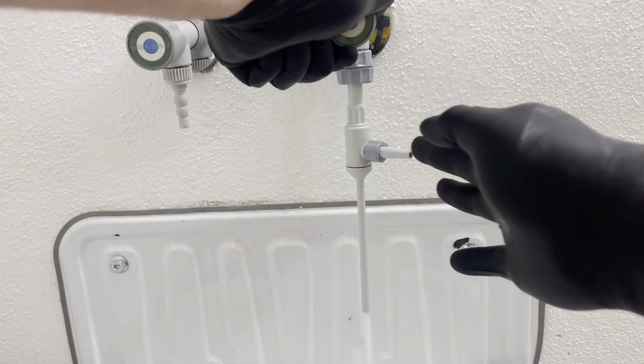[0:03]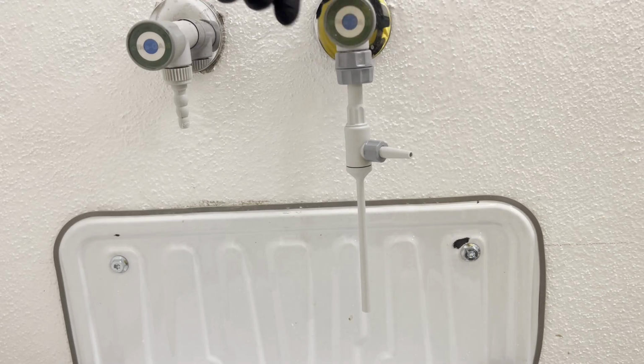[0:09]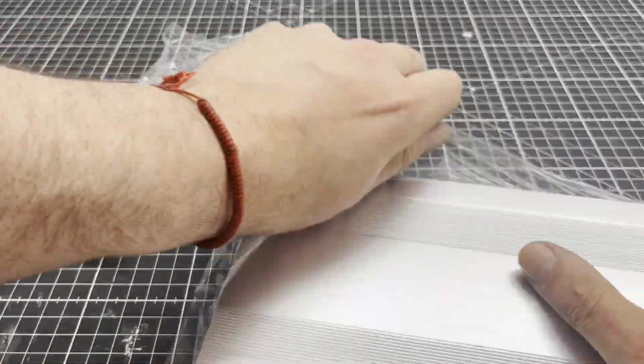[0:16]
While I was using a vacuum ejector during my last project, I thought that an electrical pump with an adjustable flow rate would be very practical in the lab. When I have an idea, I usually have a picture in my mind straight away. This time was no different.
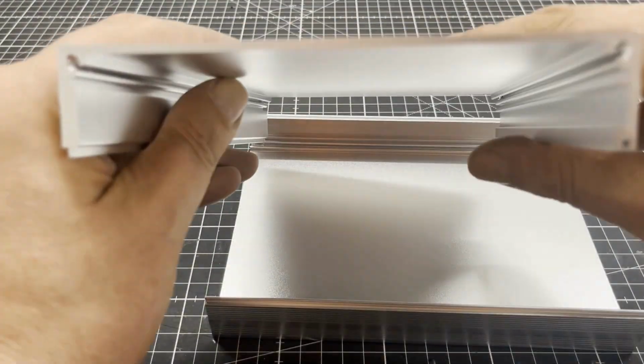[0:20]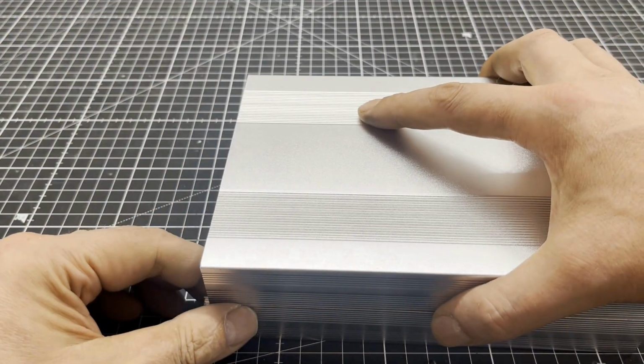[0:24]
Everything was supposed to be housed in the stylish aluminium box. The box is based on a tongue and groove system.
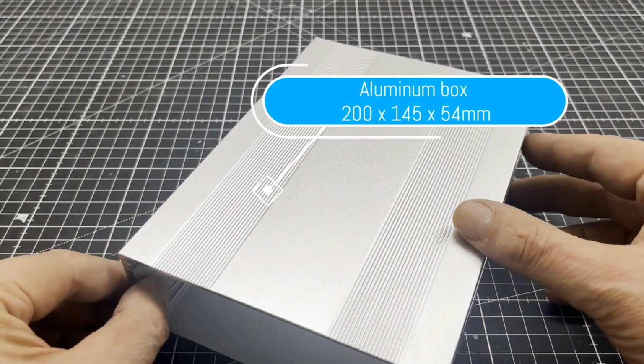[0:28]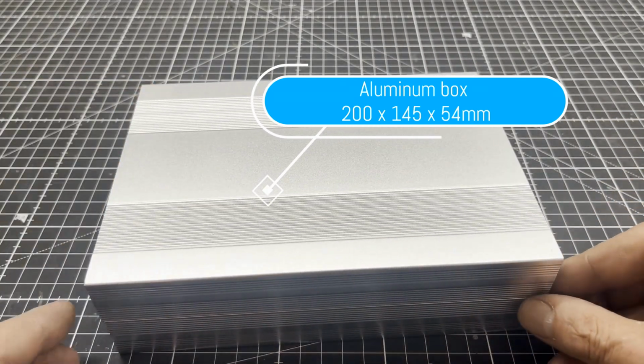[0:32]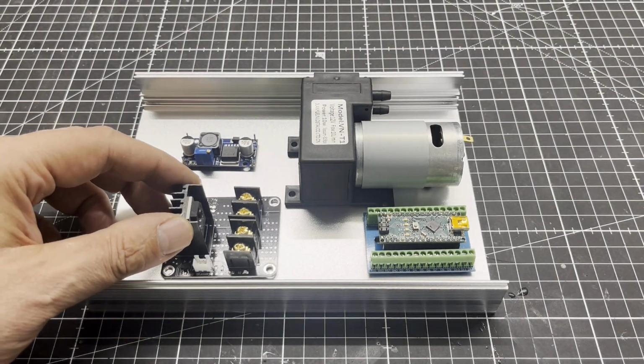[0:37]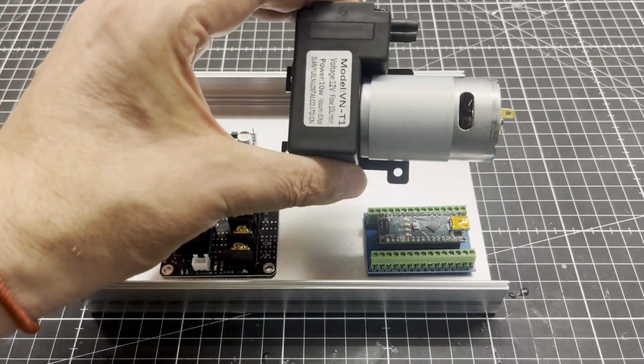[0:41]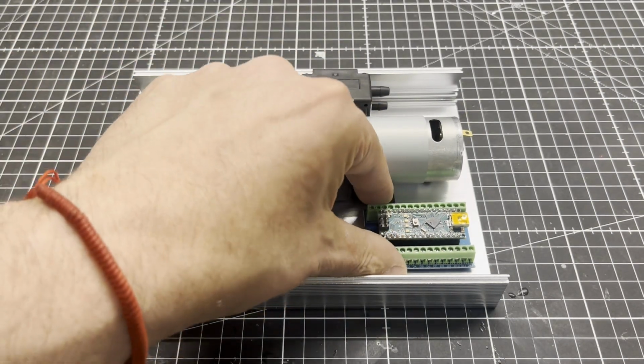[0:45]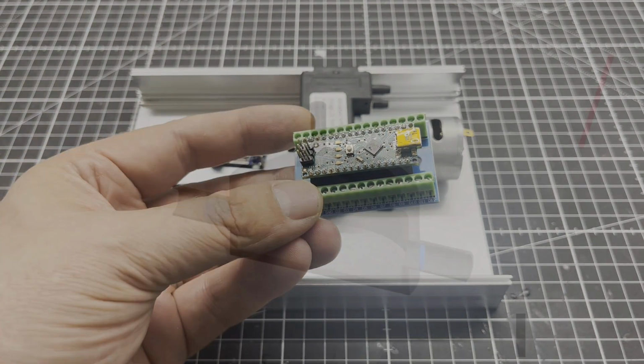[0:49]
First, I roughly laid out the components. The pump is a so-called diaphragm air pump with a flow rate up to 10 liters per minute. The microcontroller that controls the whole thing is an Arduino Nano that sits on a screw shield.
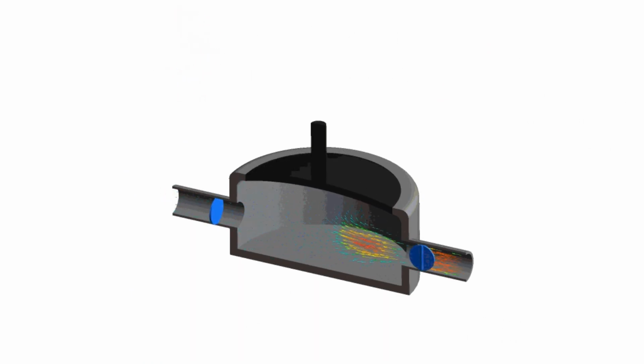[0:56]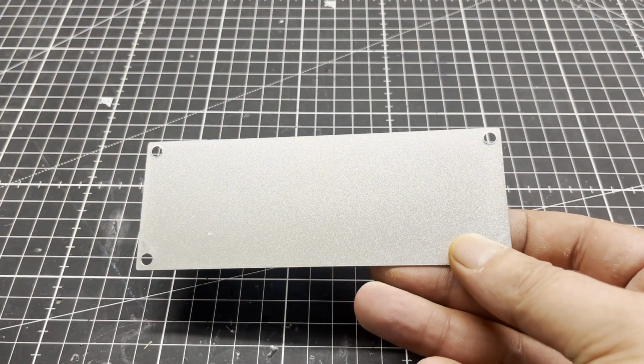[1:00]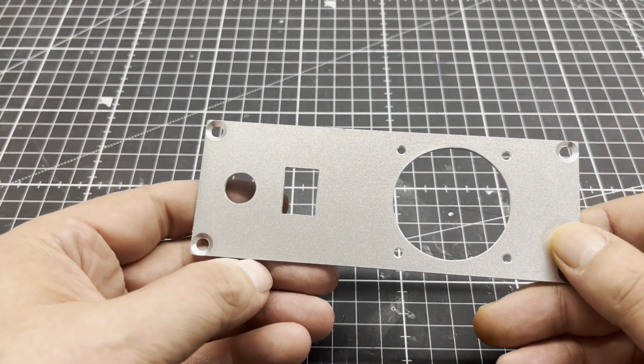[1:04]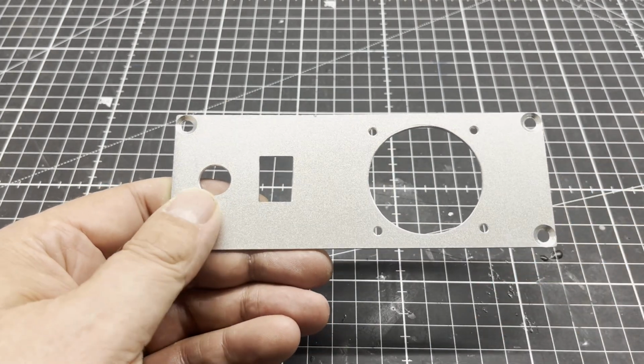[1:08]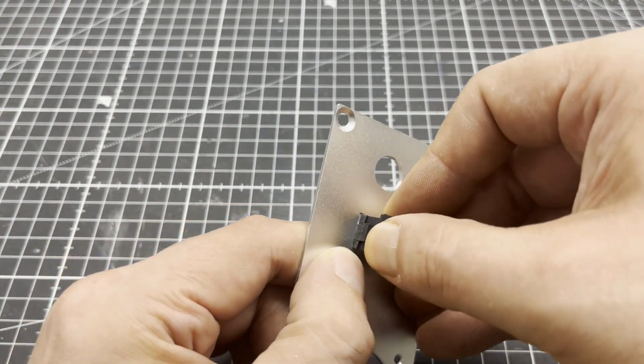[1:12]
A tip if you have to make cutouts. Mark them out either with layout ink and a scribing needle or with a paper template that you glue on with spray adhesive. Always saw out smaller than the cutout needs to be, then do the rest with a file. It is best to use a fretsaw with a metal blade for cutting.
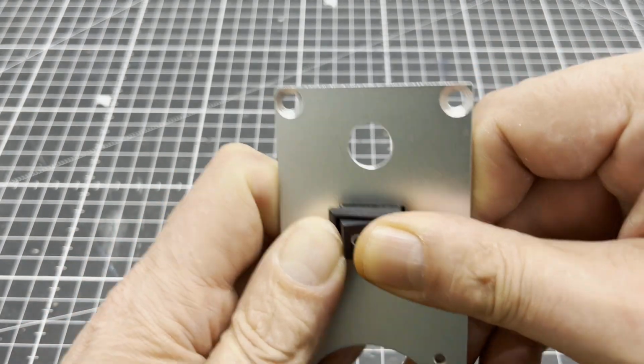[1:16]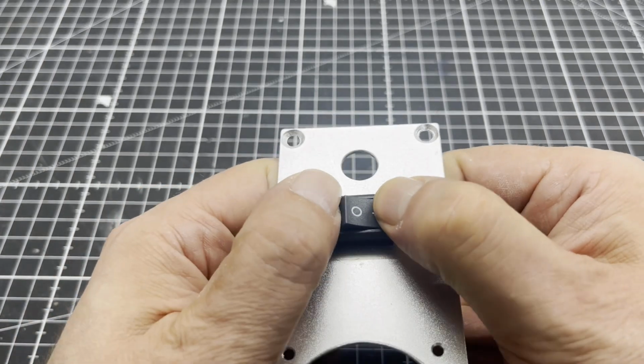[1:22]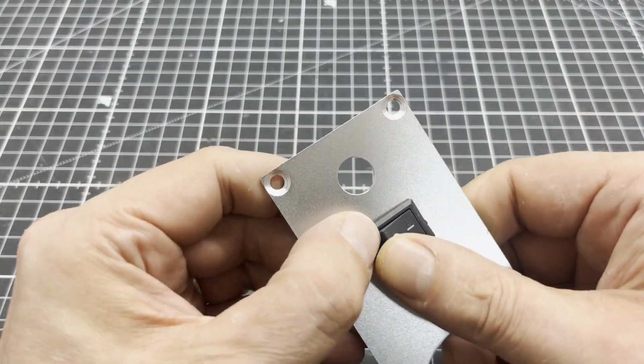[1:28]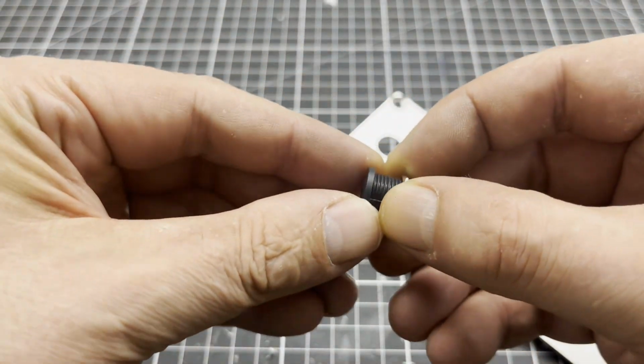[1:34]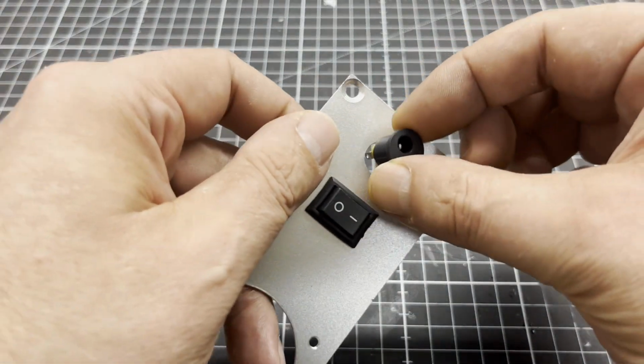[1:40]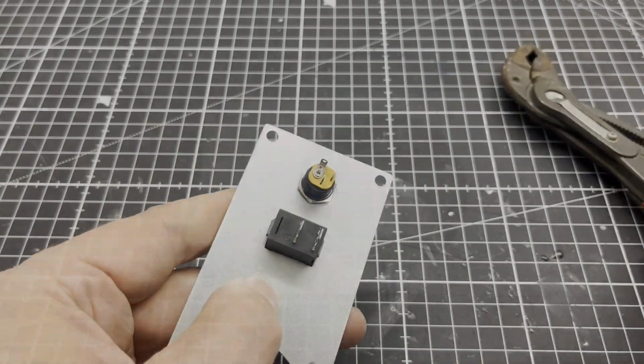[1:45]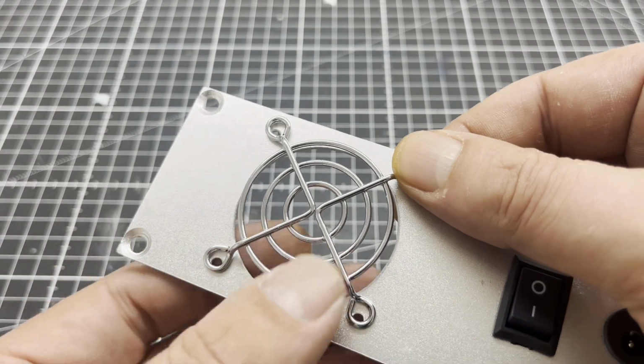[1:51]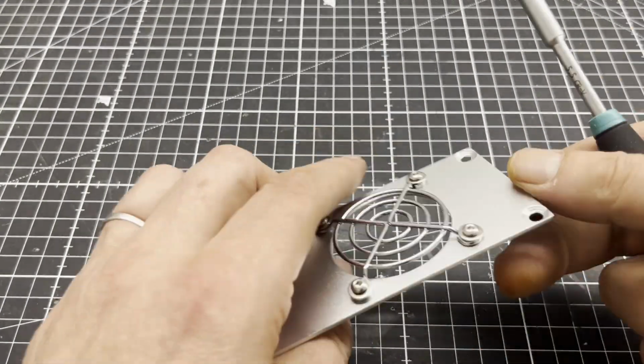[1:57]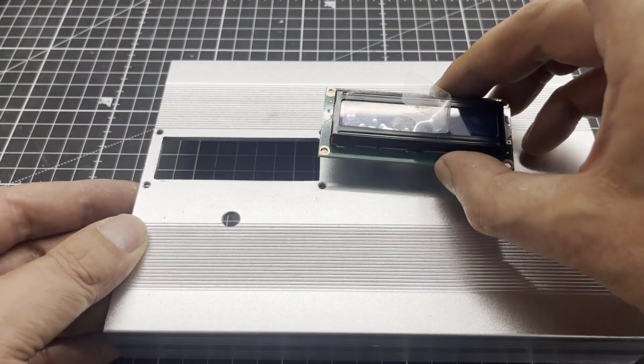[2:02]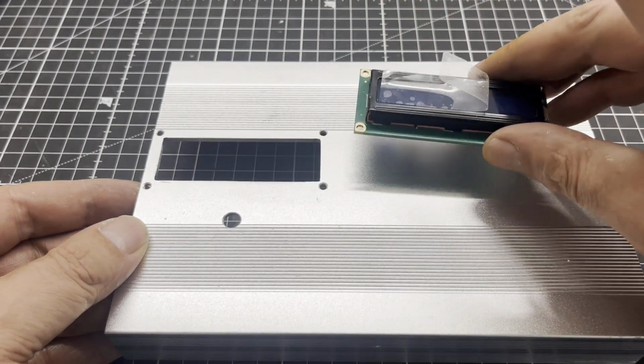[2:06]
The cutouts you see here are for an LCD and a rotary encoder with push-button function as a human-machine interface.
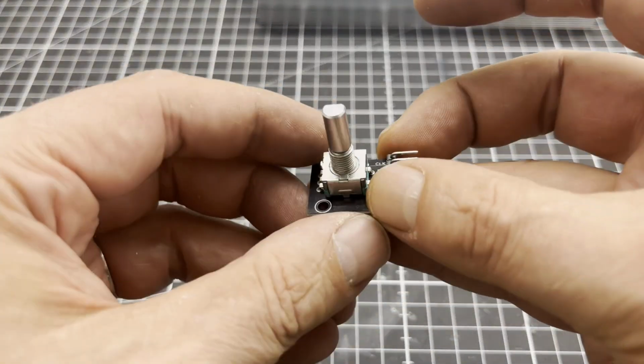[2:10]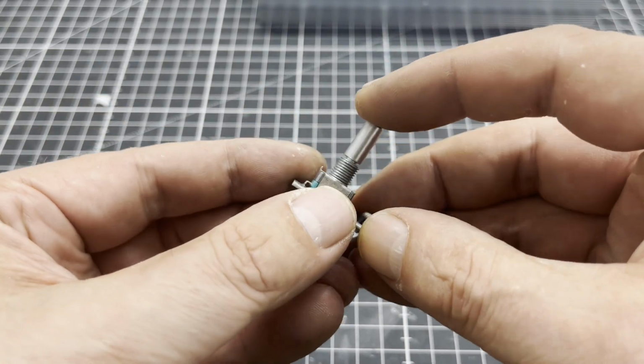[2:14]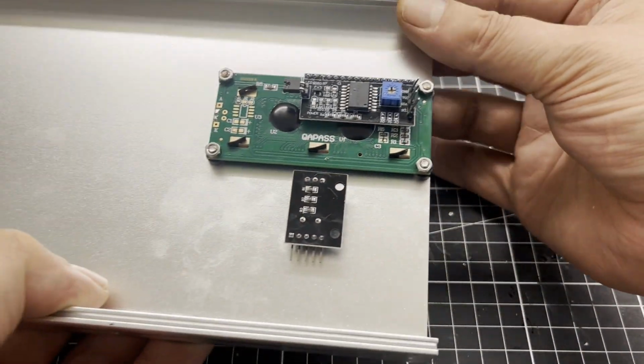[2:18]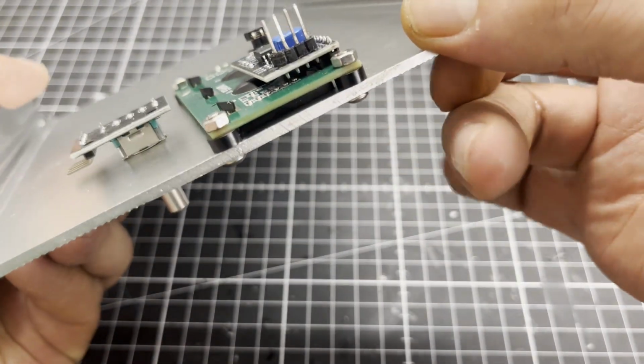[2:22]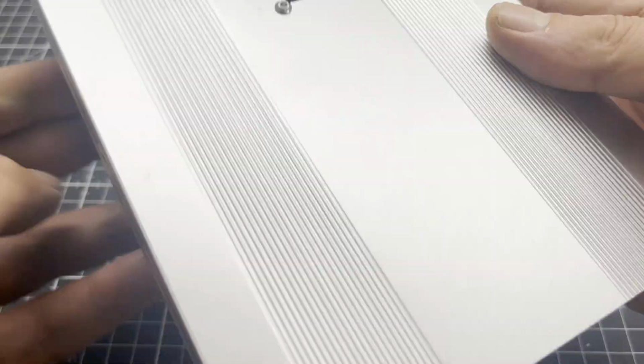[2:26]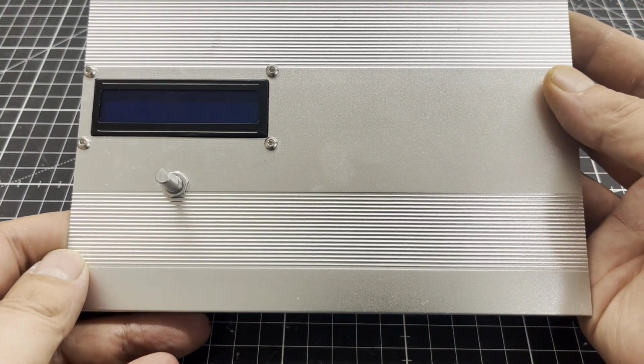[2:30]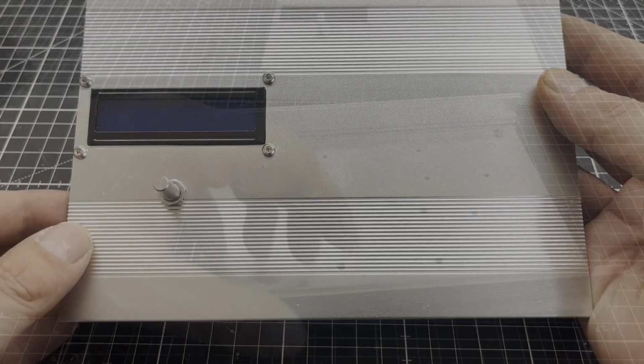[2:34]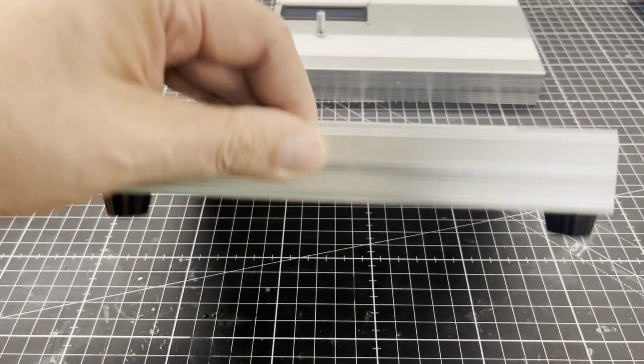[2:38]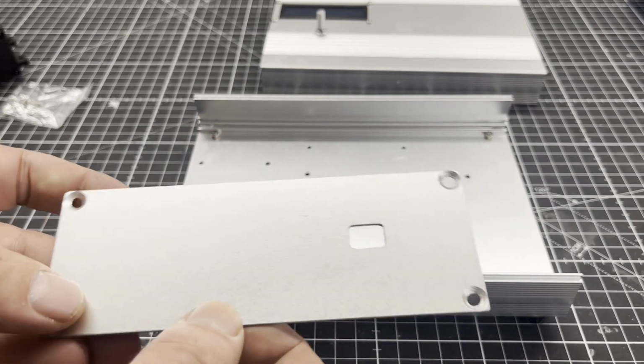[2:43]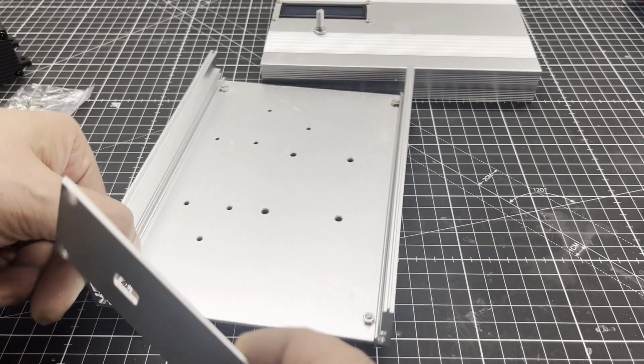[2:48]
Next, I drilled the mounting holes for the components and mounted the rubber feet. I added another cutout to the second side panel. It is for the USB connection of the microcontroller.
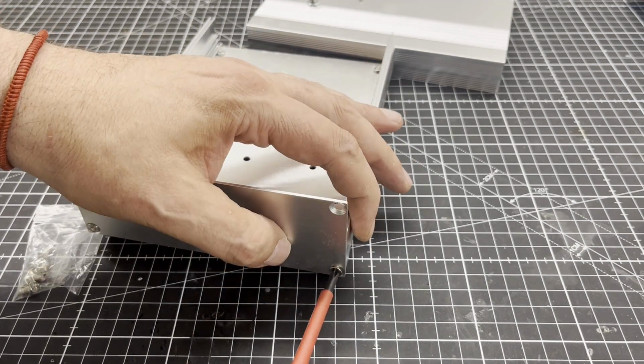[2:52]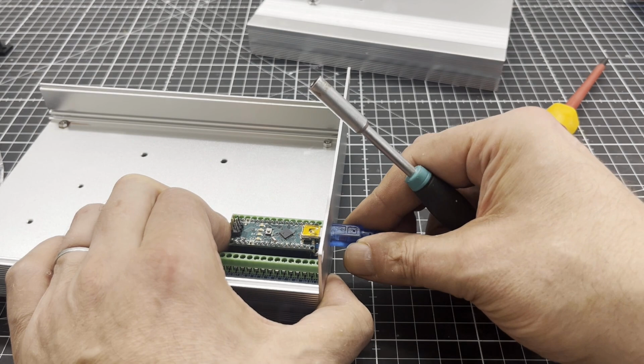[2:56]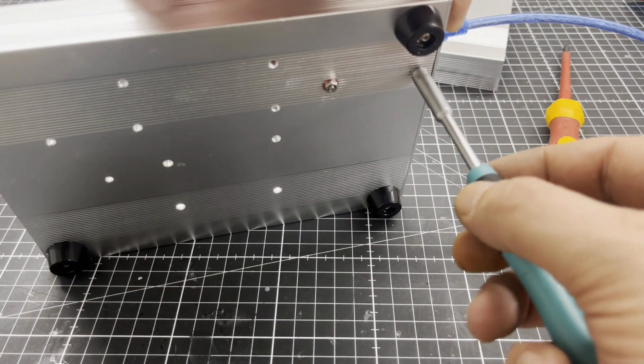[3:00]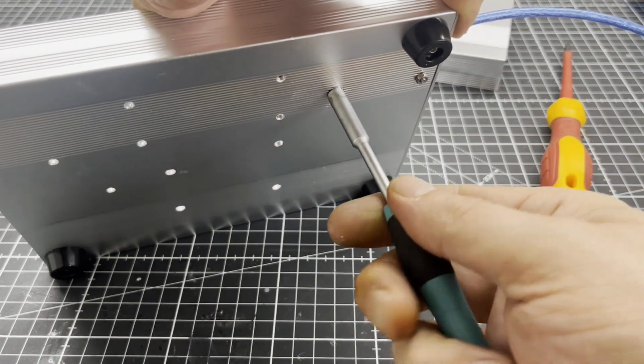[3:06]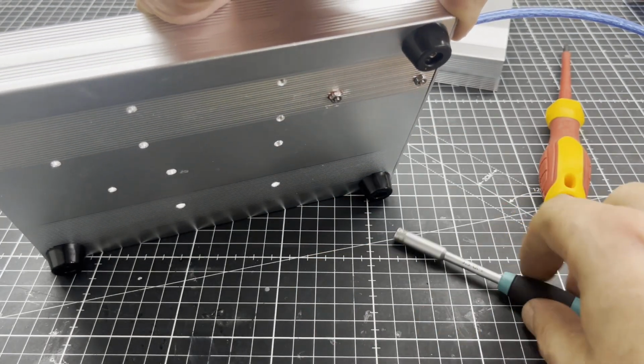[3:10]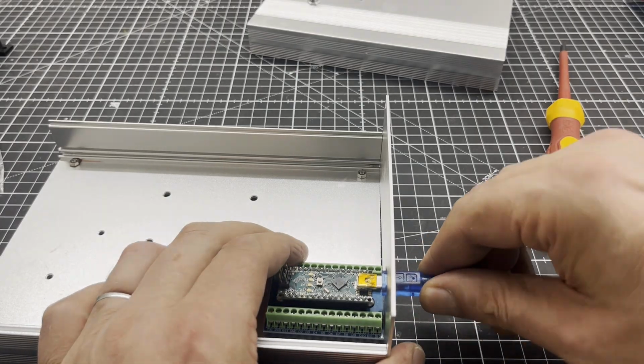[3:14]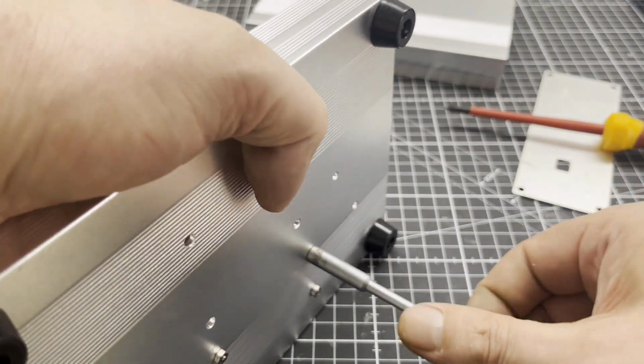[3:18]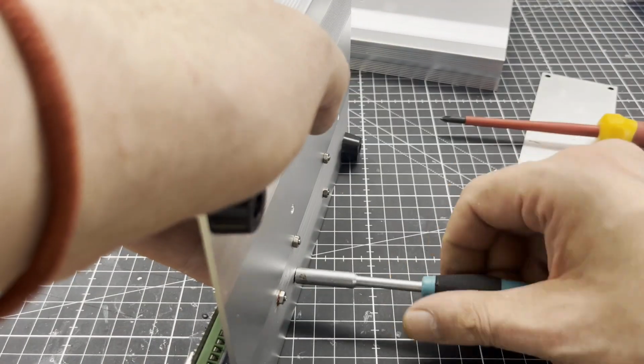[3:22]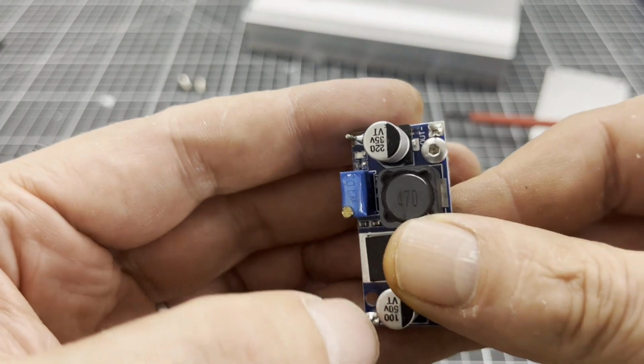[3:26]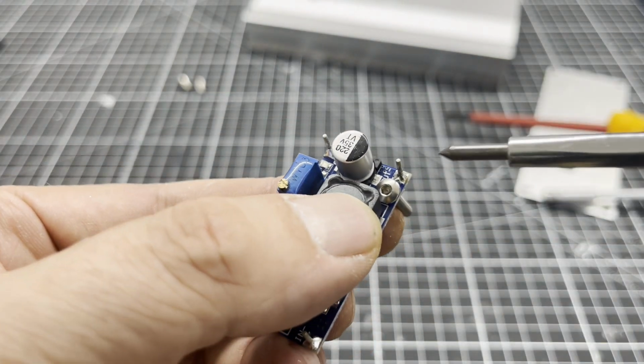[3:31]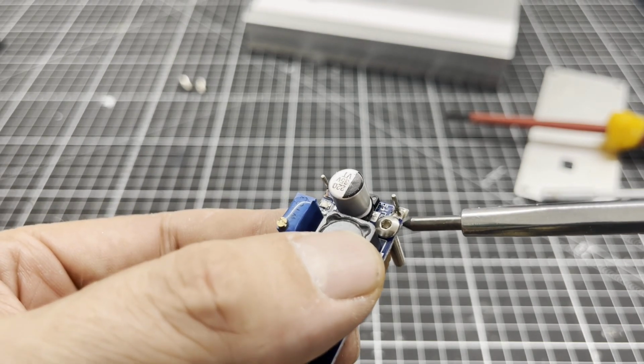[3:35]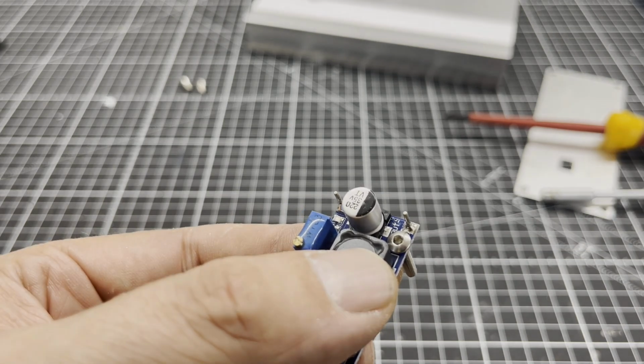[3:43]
Here I am mounting the power MOSFET driver, which is normally intended for the heating bed of 3D printers. I don't know what some engineers are thinking when they design a PCB. I keep noticing that the mounting holes on the PCB are too close to some electronic components. The screw head touches the electronic component, which can end in a disaster if the PCB is mounted on metallic surfaces.
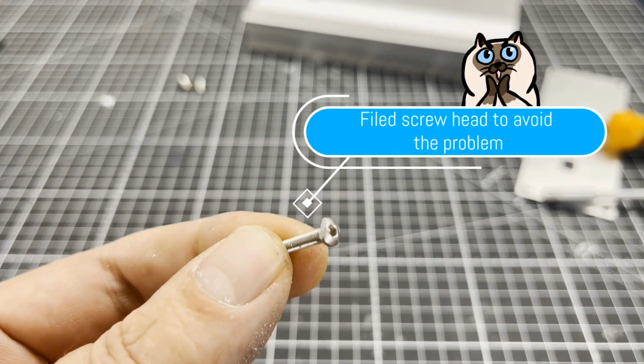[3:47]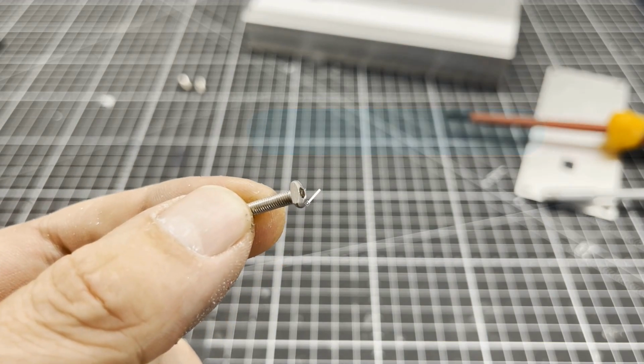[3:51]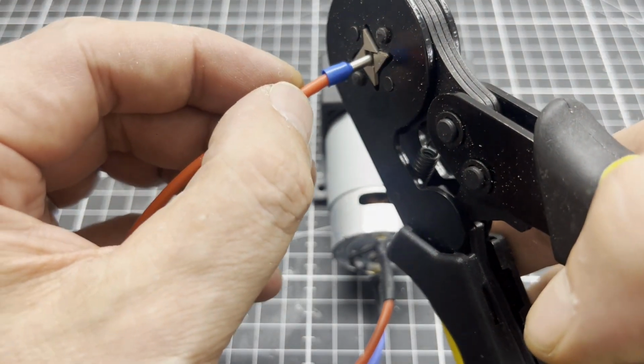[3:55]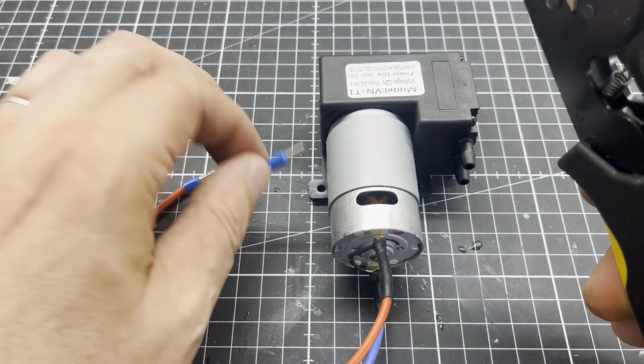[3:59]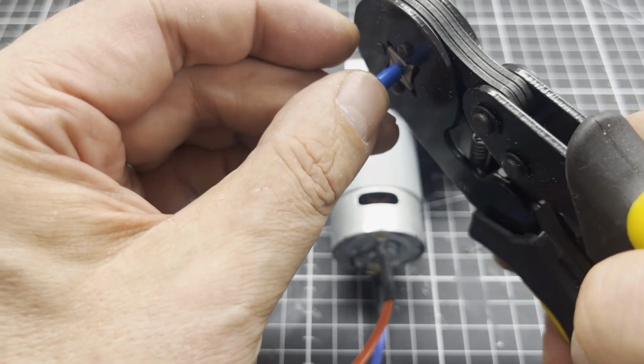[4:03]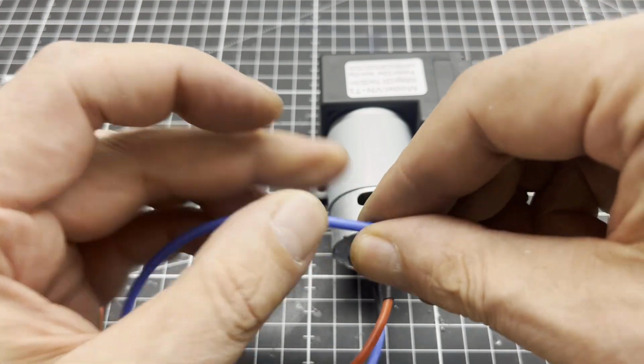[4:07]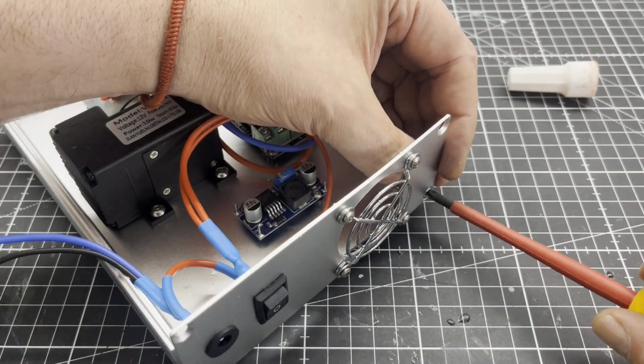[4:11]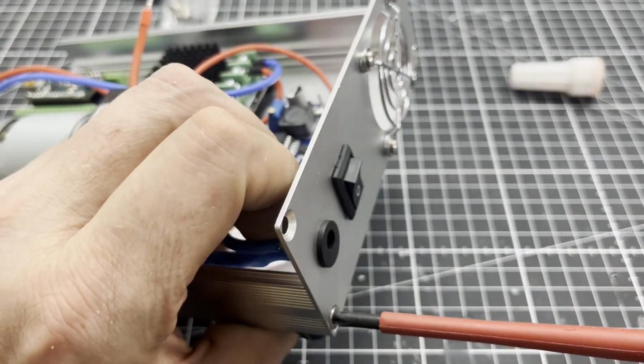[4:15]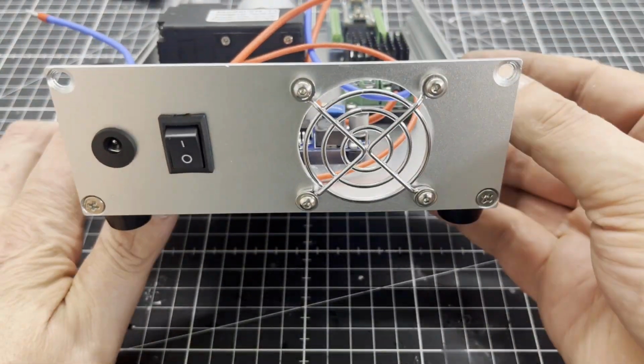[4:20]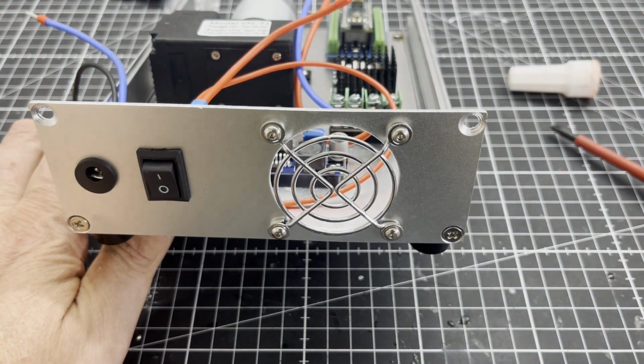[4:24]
It would have been better if I had placed the ventilation opening directly at the end of the motor. However, as the motor only gets moderately warm even after hours of operation, this is not a problem.
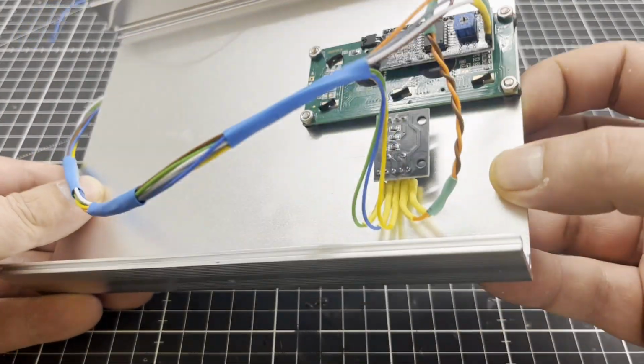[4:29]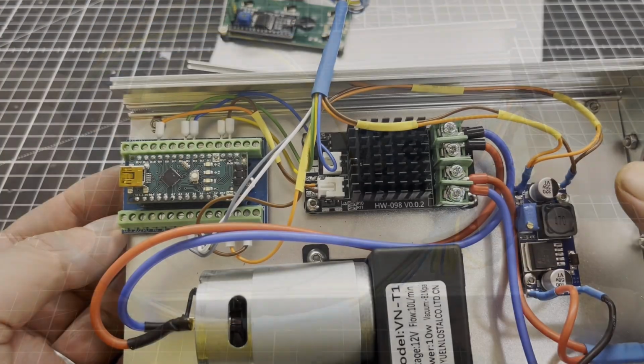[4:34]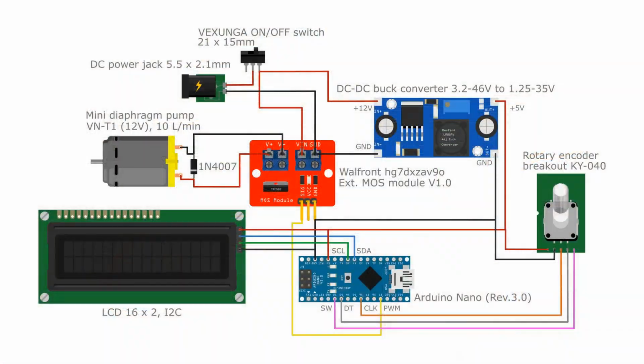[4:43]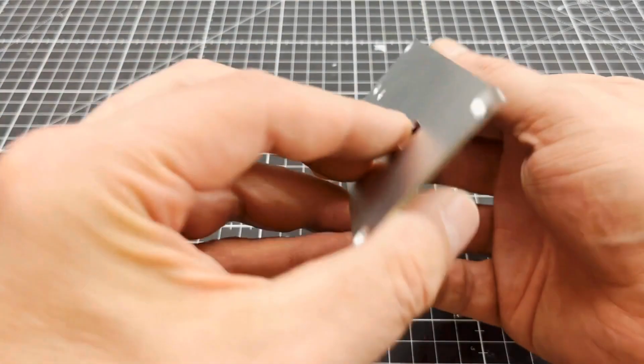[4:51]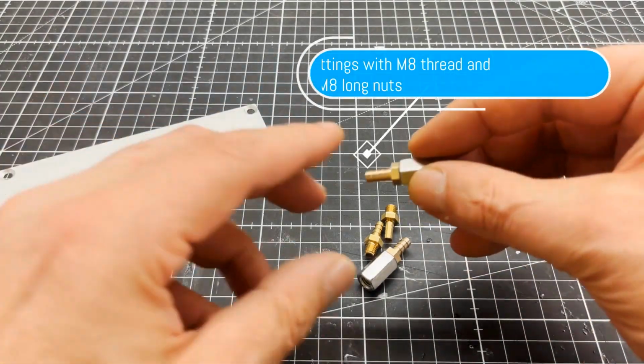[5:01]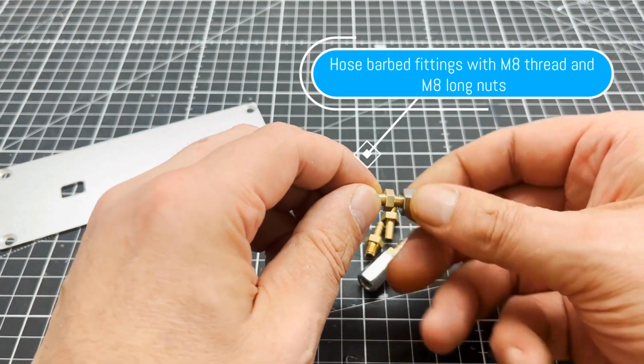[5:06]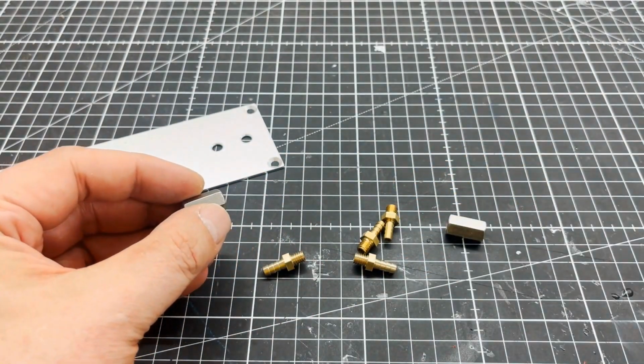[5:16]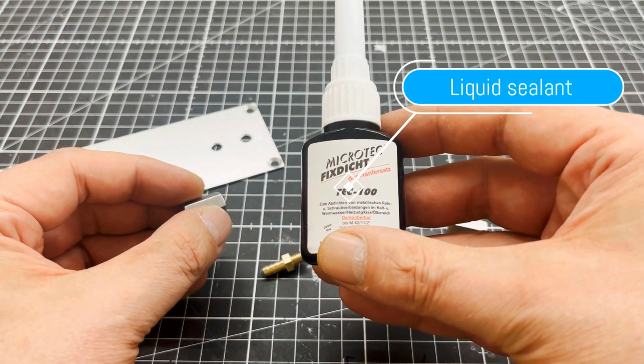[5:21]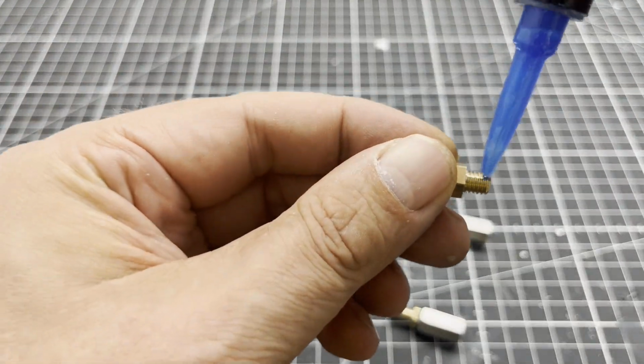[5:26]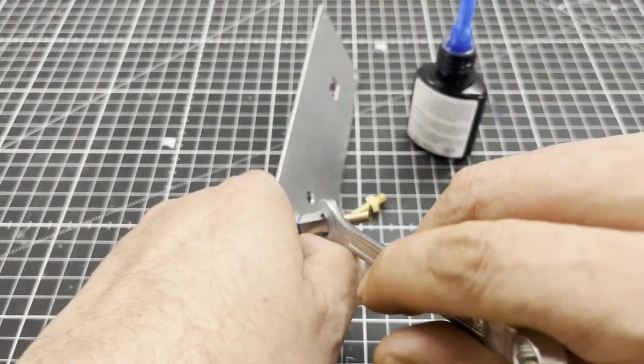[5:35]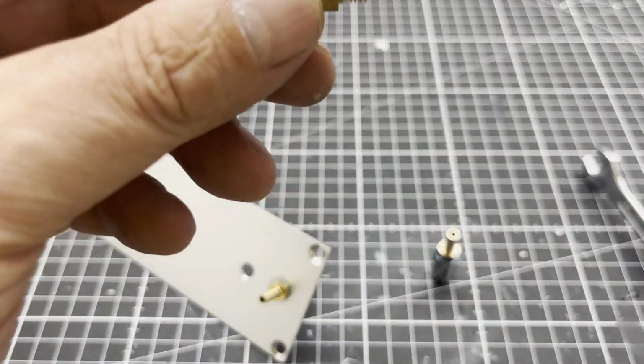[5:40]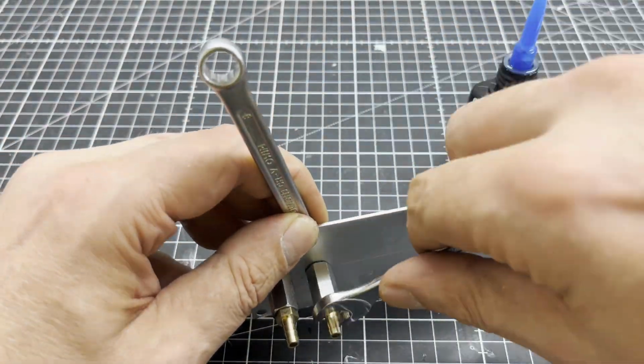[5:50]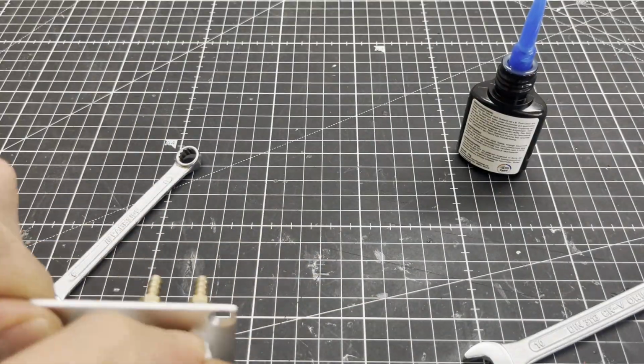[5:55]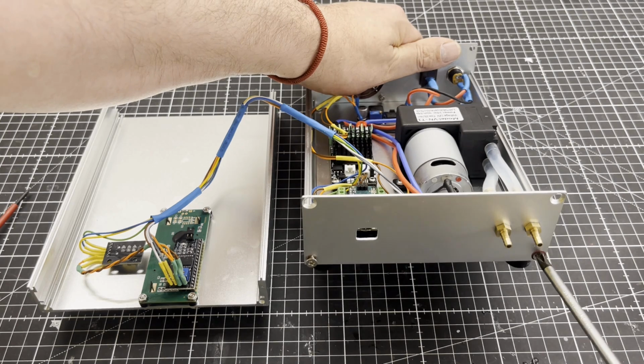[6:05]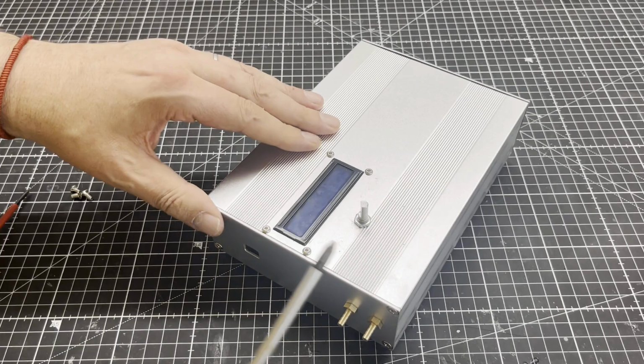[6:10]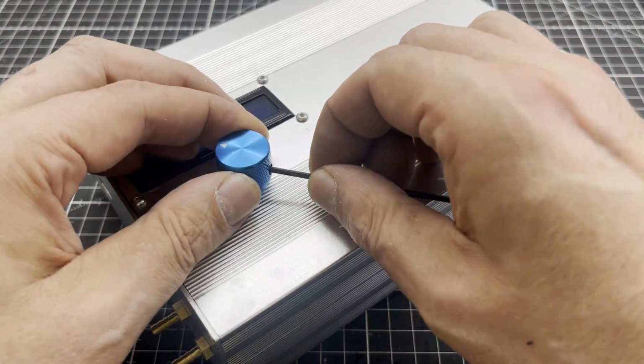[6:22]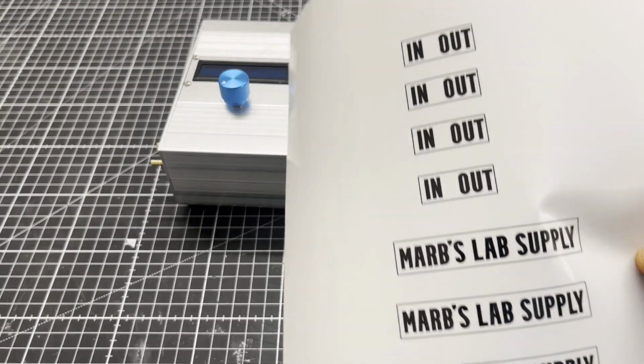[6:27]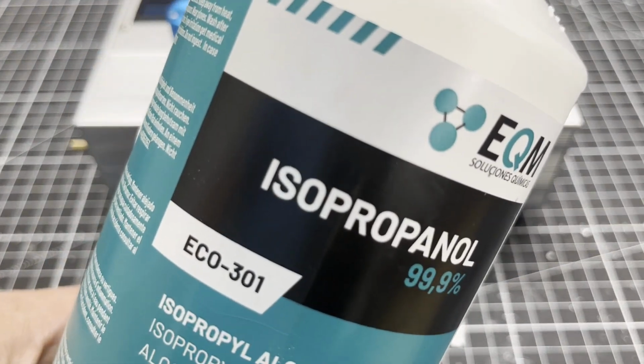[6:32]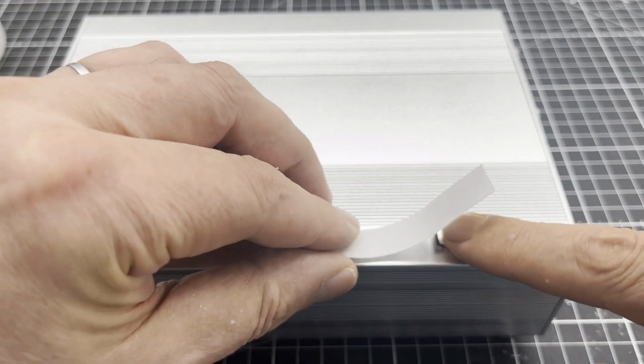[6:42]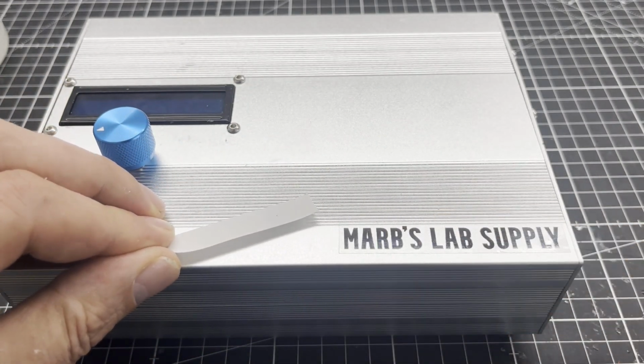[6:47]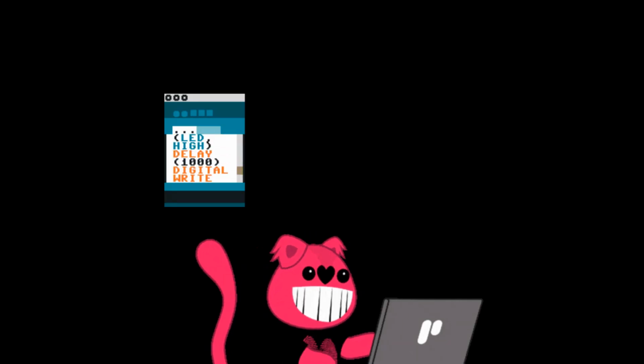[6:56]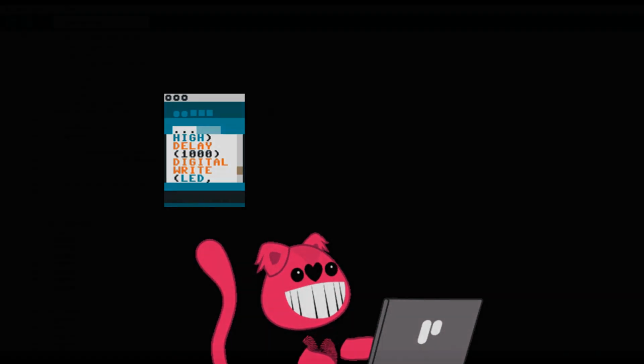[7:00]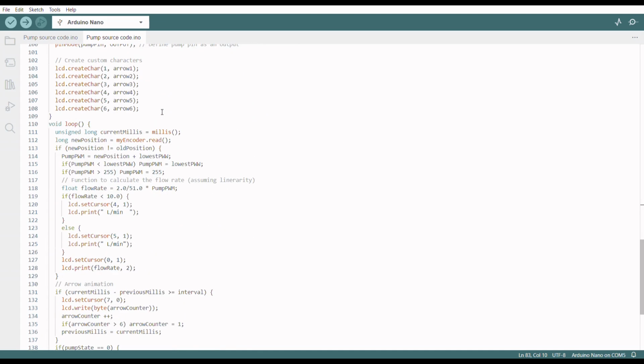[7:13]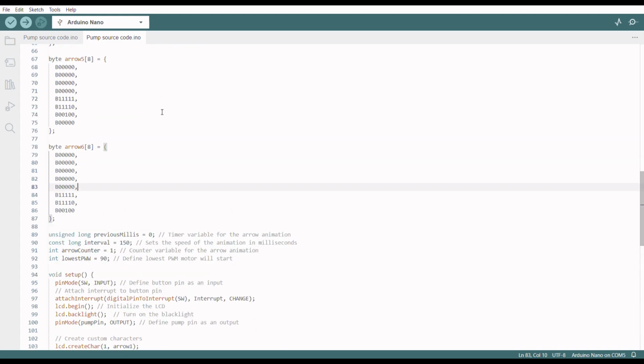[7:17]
After the hardware was done, I wrote a basic code for the pump. The code allows the volume flow to be set via the rotary encoder and the pump to be switched on and off via the push button function. However, the code can easily be extended for more functionality, such as a timer or interval operation. Code and wiring diagram are on GitHub.
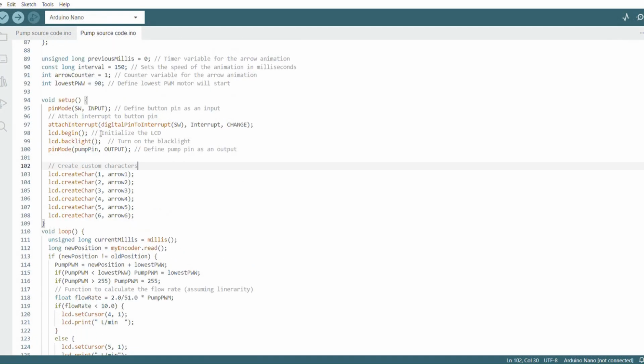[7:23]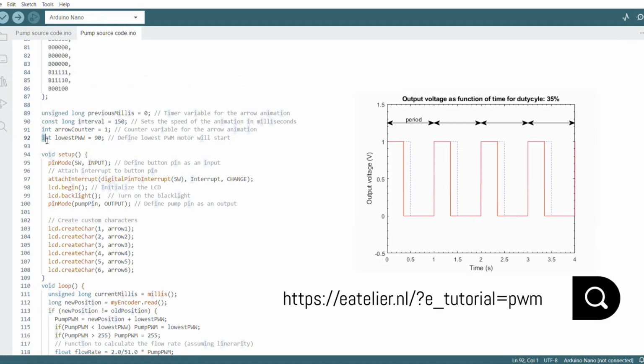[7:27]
Link in the description. A few words about pulse width modulation. The motor speed cannot be reduced to zero via PWM, as a motor would require an increasingly higher voltage, respectively current, to still rotate. If the motor is not turning, its impedance is very low, which leads to a higher current and would eventually overheat the motor.
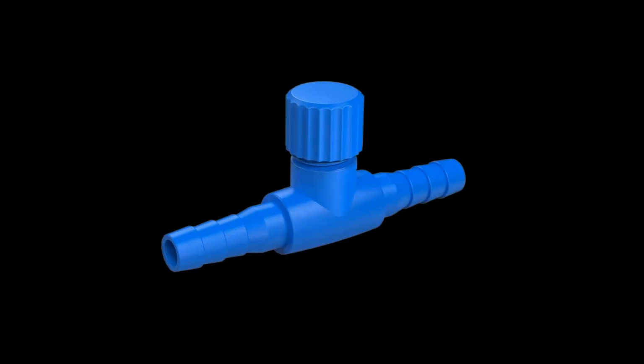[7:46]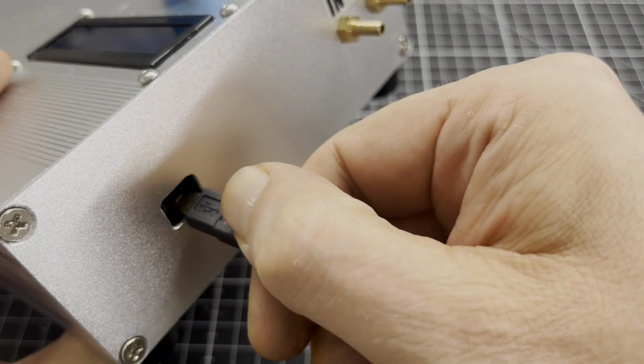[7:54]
If you need a very low flow rate, I would recommend an additional air regulating valve from the aquarium supply store. Let's upload the code.